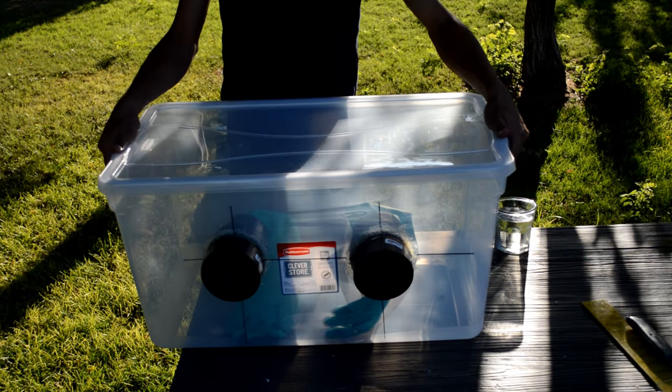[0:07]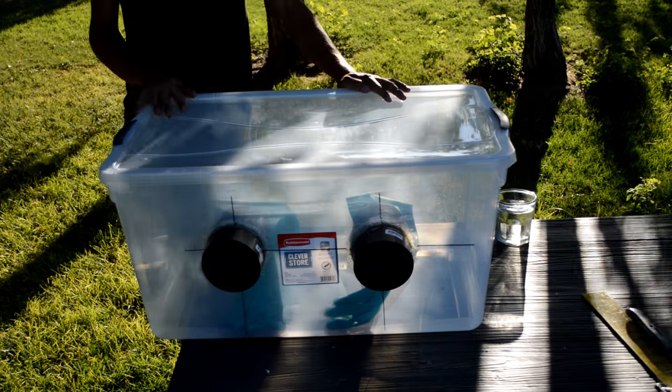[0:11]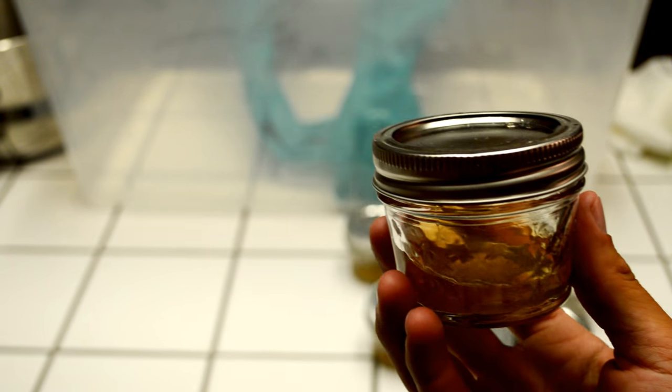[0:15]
Today we're going to show you how to construct a sterile glove box, the purpose of which is to provide you with a sterile workroom of sorts to perform everything from agar petri dish preparation to sterile spore printing. This build is a cheaper and less intensive project than building or buying a laminar flow hood, which is the other popular option for creating a sterile workplace.
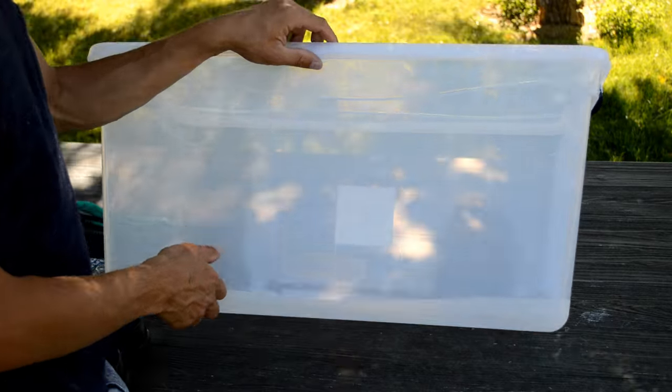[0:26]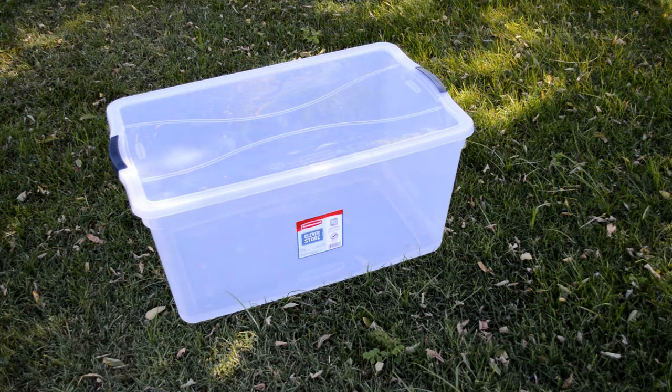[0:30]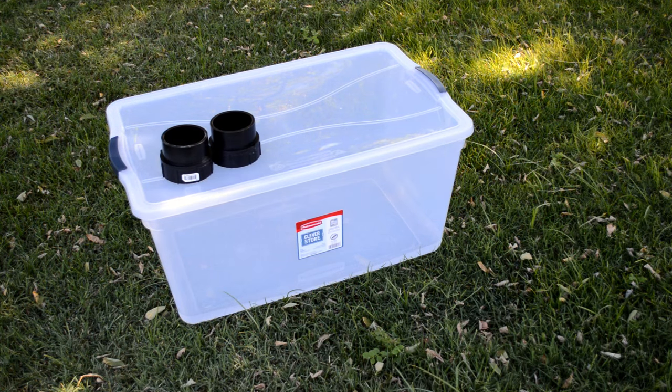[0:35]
For this build you will need a plastic tote, making sure that the plastic is clear because you will need to be able to see into it. Another nice feature to look for are the lid clamps. Then you will need some sort of short piping, and these will serve as the glove ports. For this build we purchased both male and female threaded ABS adapters.
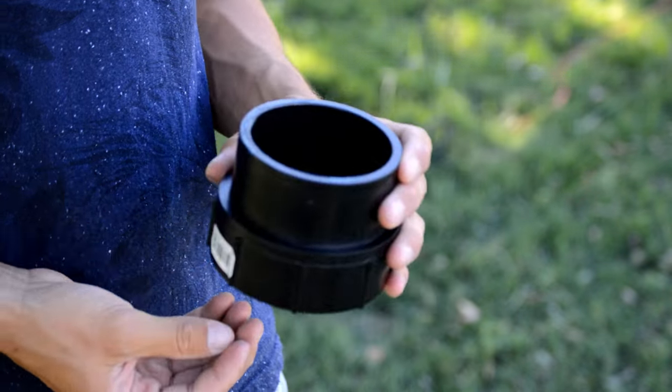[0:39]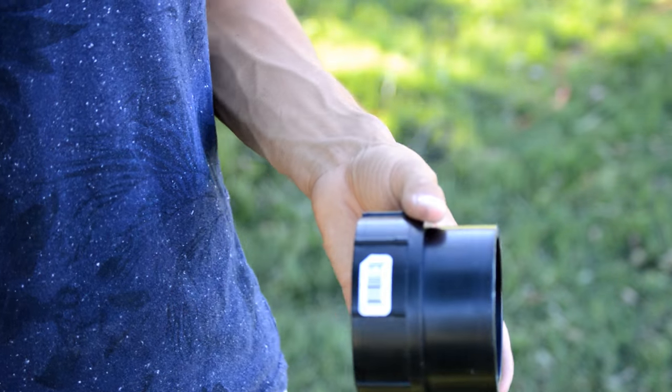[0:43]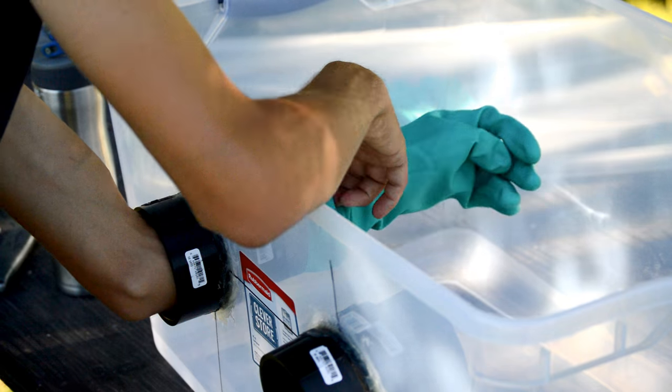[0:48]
We used 3 inches here, because we could comfortably fit my hand through them, but looking back, I would have opted for a larger size. One, because my gloves had huge openings, and two, because I couldn't get my arm in past my elbow, and being that this is a fairly large tote, I could have used the extra reach.
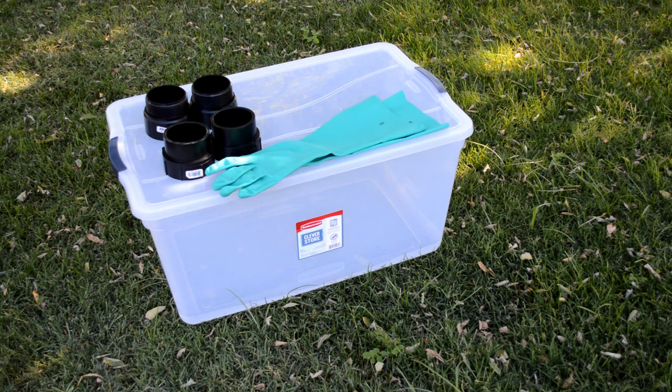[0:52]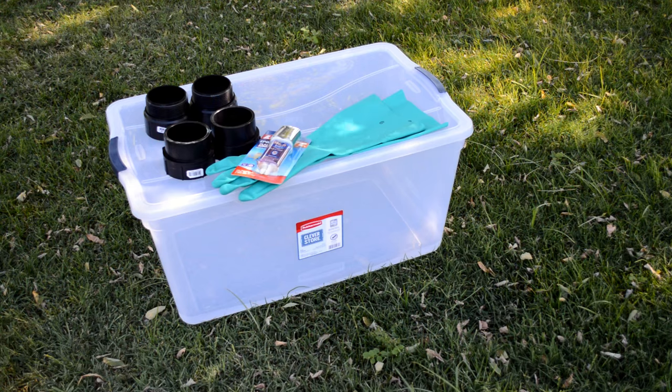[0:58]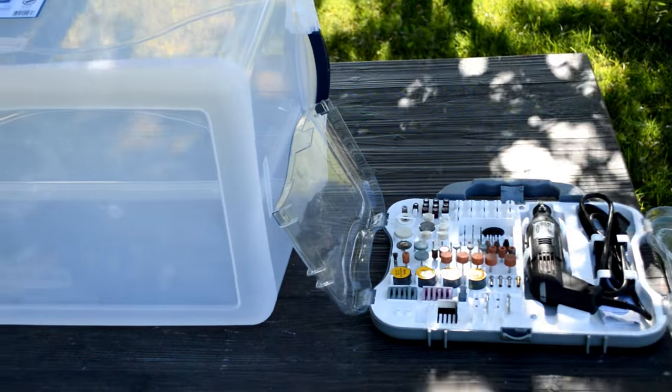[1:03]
Moving on, you will also need gloves. Make sure they are long enough for you to reach all the way across the inside of the box. Then you will need some plastic epoxy to secure the pipe ports of the box. And lastly, you will need to get some foam weather stripping. Now that we have everything we need, we can begin the build.
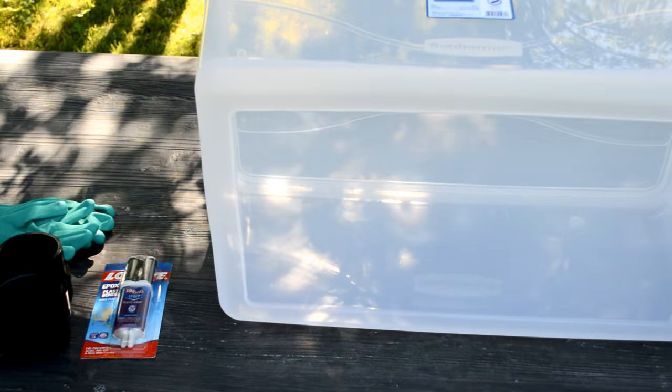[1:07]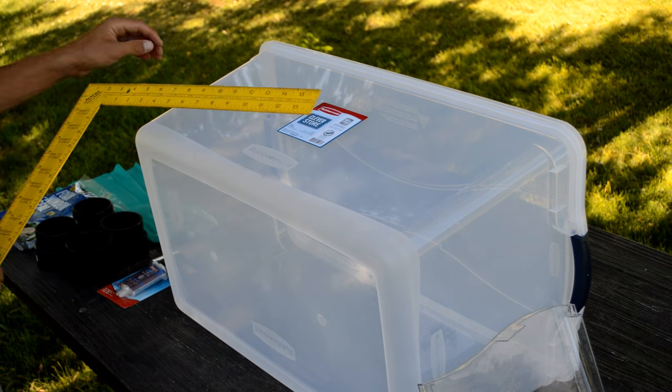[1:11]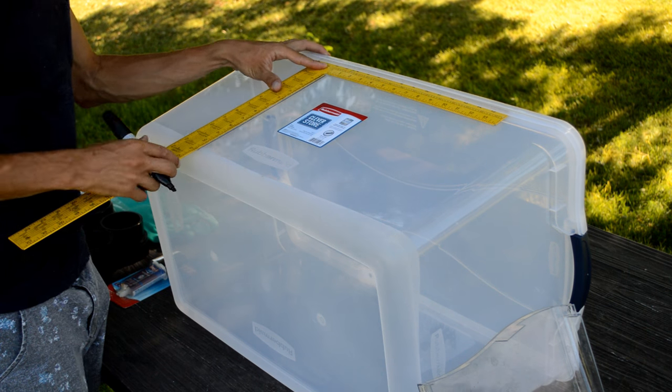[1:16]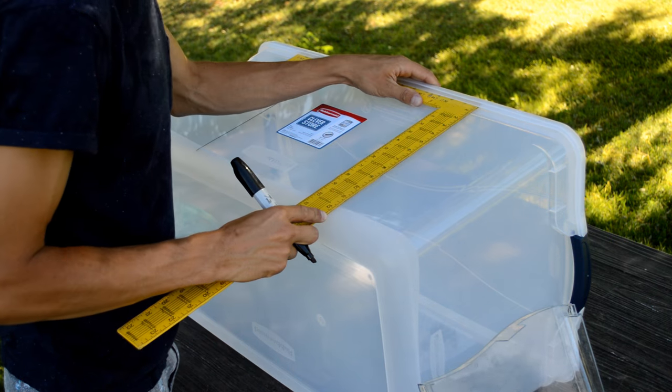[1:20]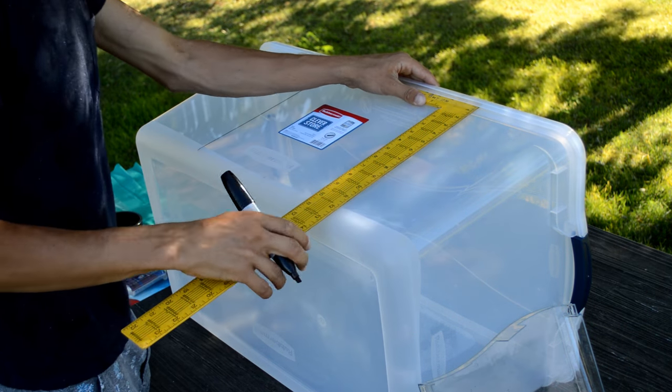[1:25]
The first thing you're going to want to do is to mark out your holes for the glove ports. One trick to figure out your hole space is to put your arms down at your side and bend your elbow upward to a 90 degree angle as if you are looking down at your hands. The distance between your hands is going to be around how far apart you're going to want to make the center marks for your holes.
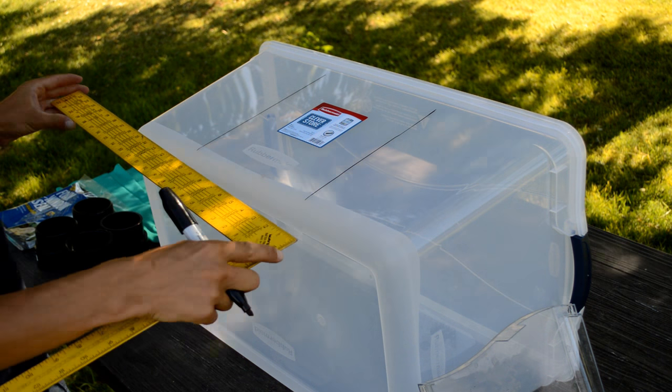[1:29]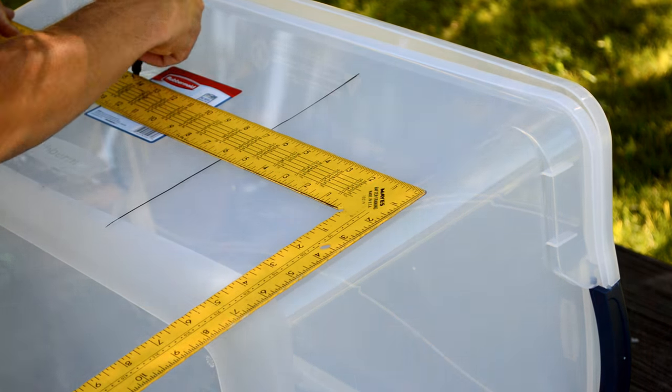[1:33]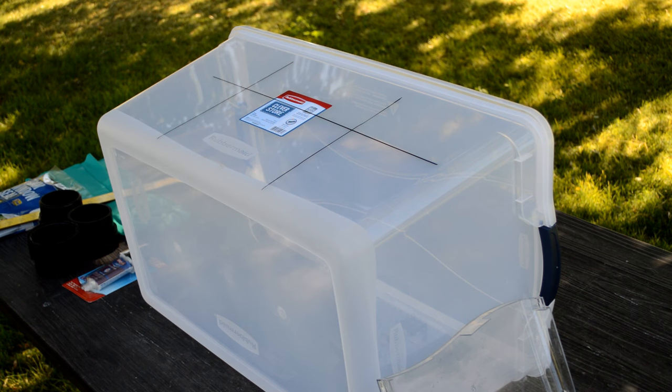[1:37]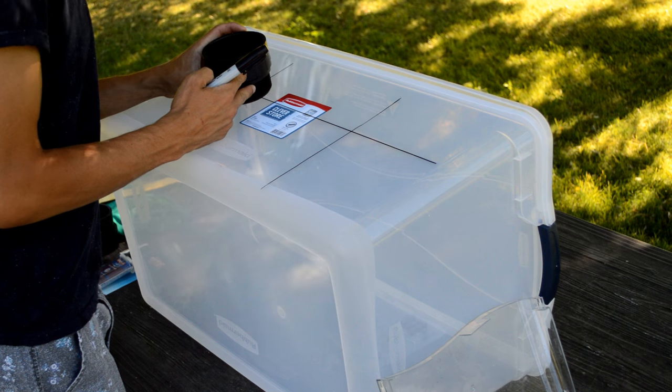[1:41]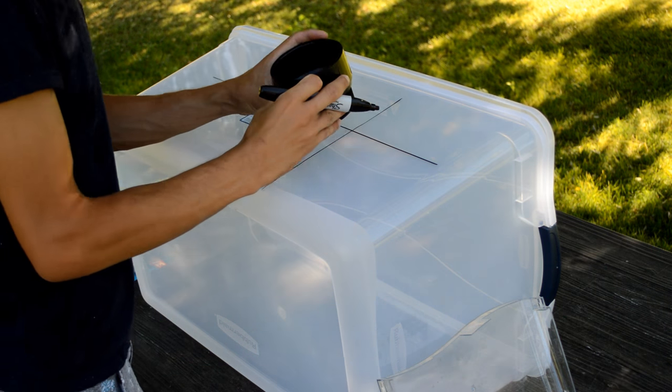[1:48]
Once you have your center point drawn, go ahead and align the pipe fittings and trace out the inner diameter of the pipe. I would highly recommend tracing the inner diameter because of the simple fact that you can always widen your hole after you make the first cut. But if your hole is too widely cut, you're going to be doing some improvising to fill the gap between the box wall and your tubing.
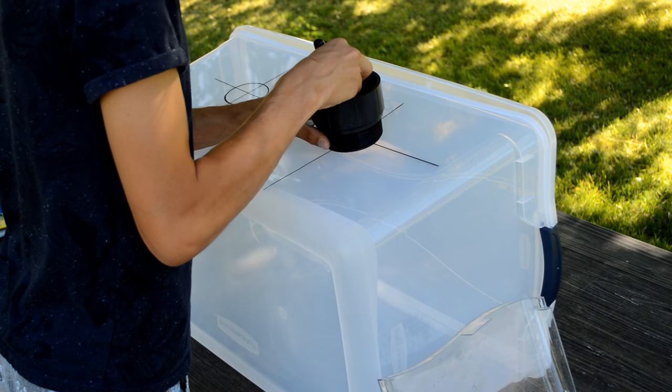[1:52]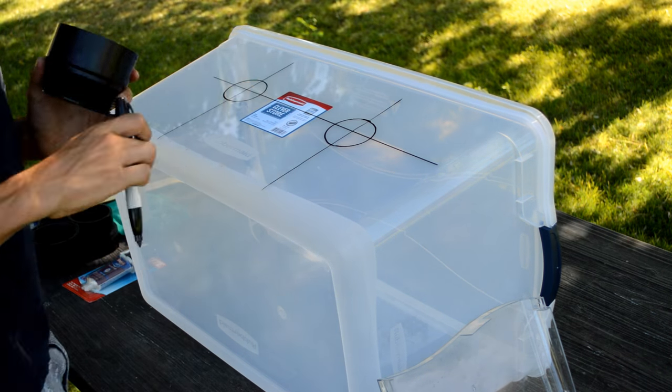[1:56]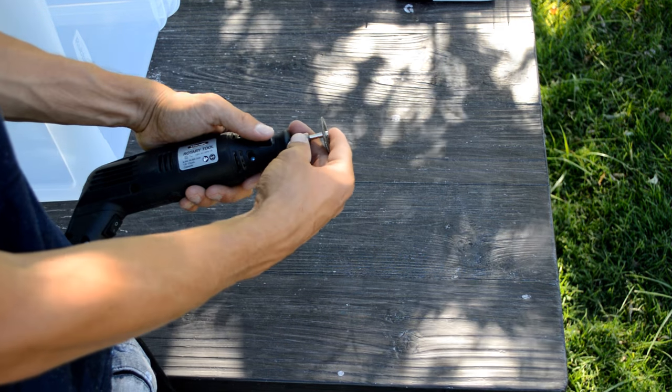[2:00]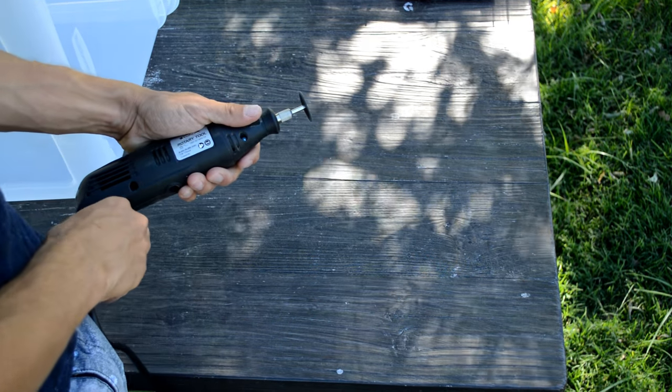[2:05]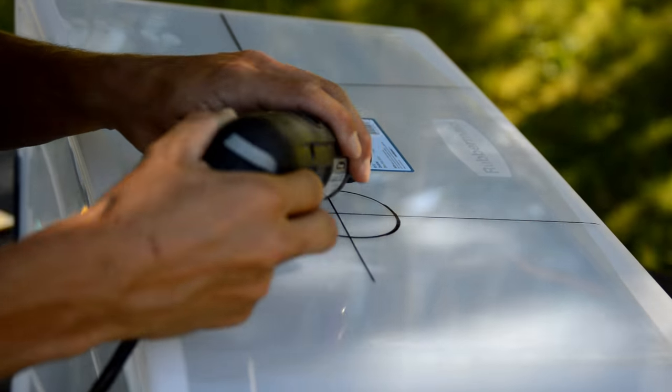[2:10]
Now that we have traced out the holes, we can begin cutting. There are a million ways to cut a hole. I wasn't able to find a hole saw, so I used this hand Dremel tool with a cutting disc instead. This method can be a little messy, but don't worry, we're going to go back and sand it all out.
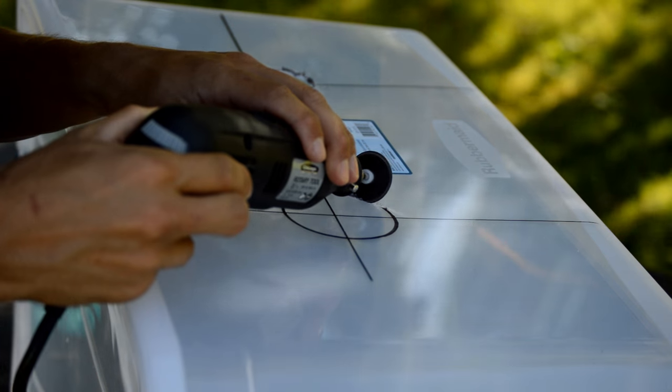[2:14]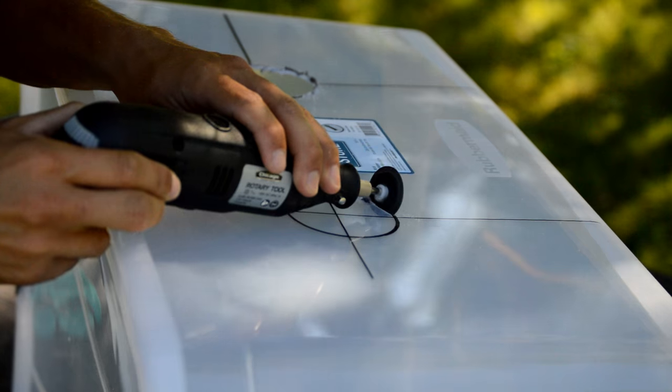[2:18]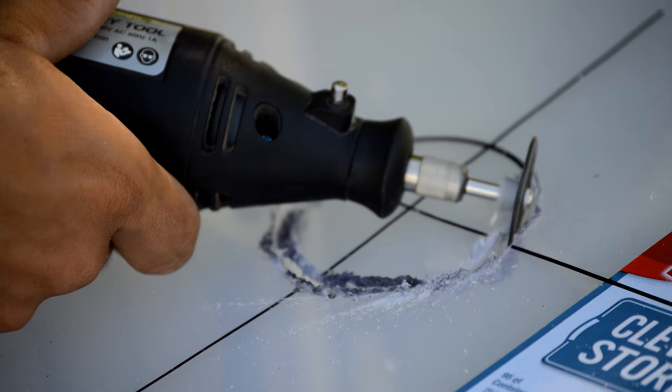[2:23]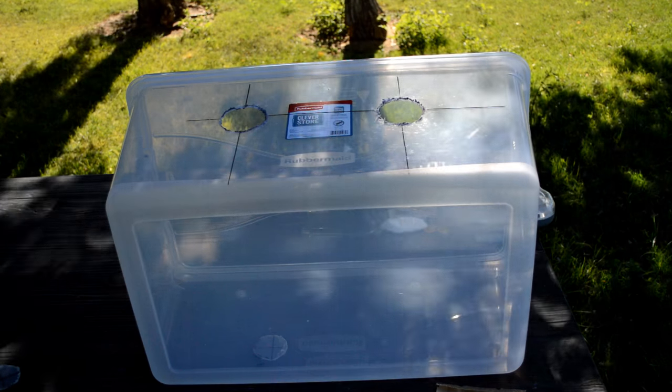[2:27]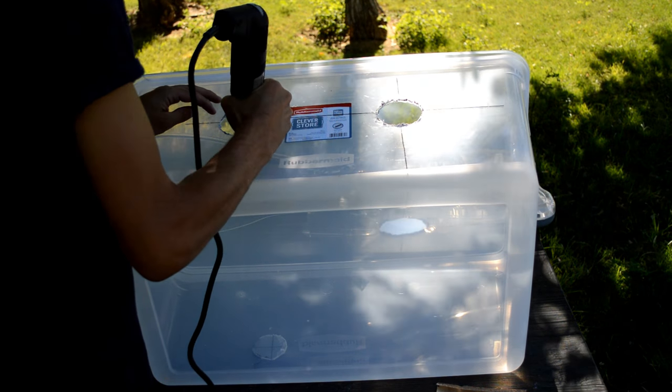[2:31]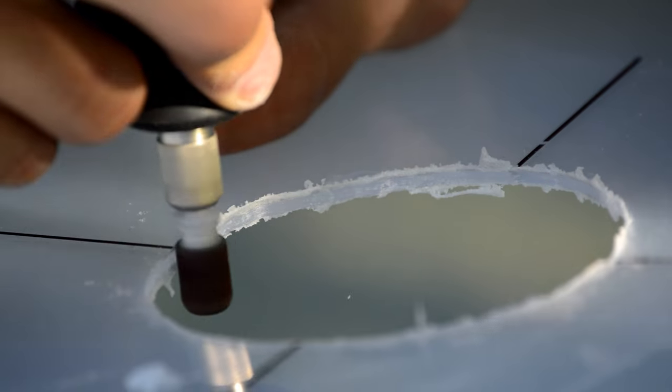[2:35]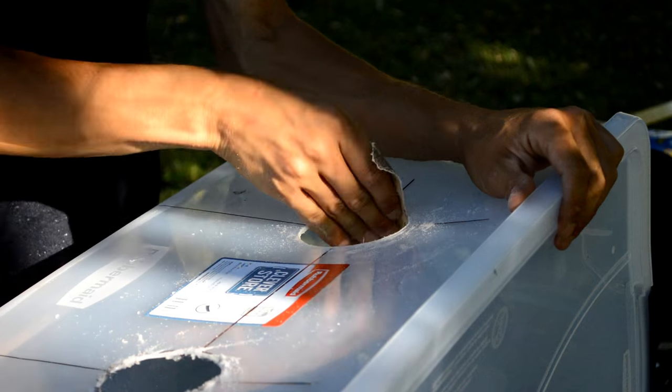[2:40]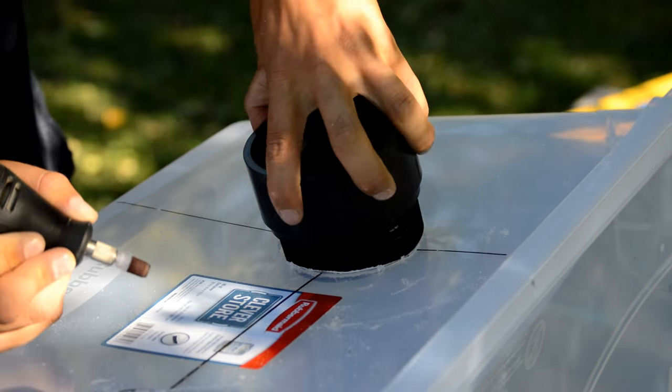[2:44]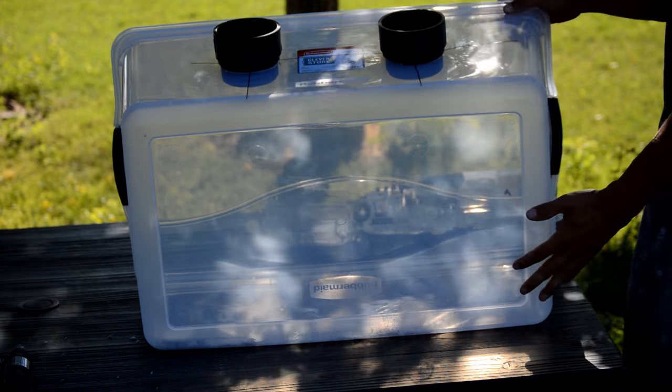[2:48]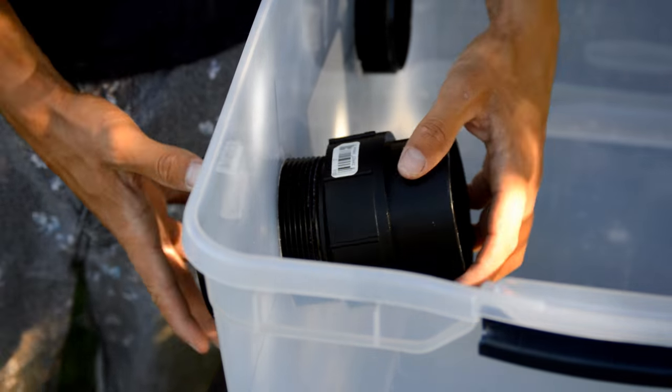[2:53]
Now that the holes have been sanded out, I'm going to go ahead and thread the male adapter into the hole from the outside. Now I'm going to screw the female adapter from the inside, making a nice tight fit.
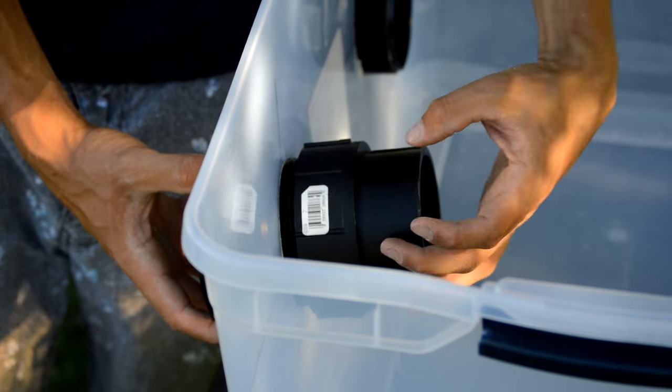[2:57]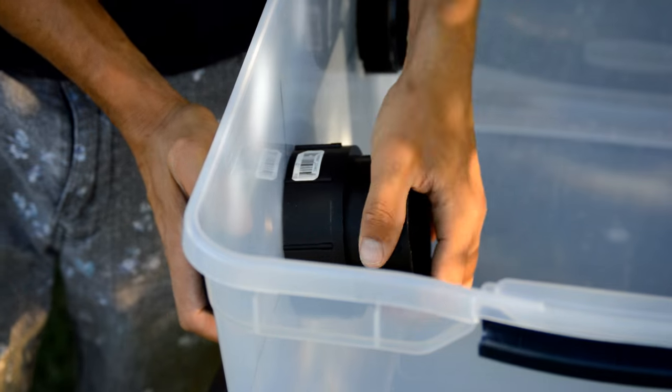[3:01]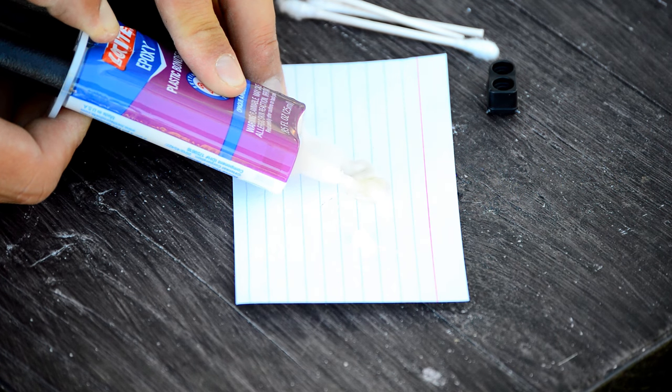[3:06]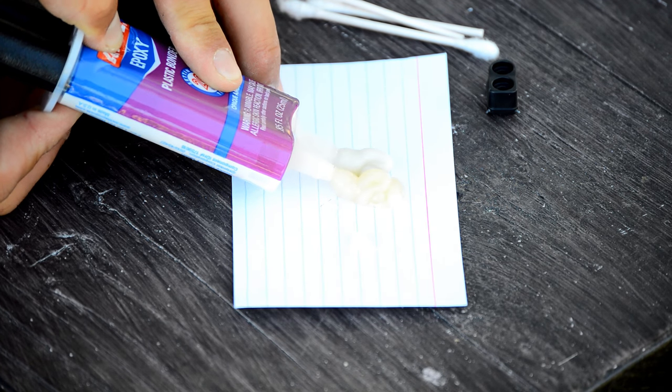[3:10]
To keep these ports from slipping or rotating, we're going to mix up this plastic epoxy. Being that this was two-part epoxy, it's not going to be pretty, but it'll do the trick. Now this stuff dries pretty fast, so don't take your time with this step.
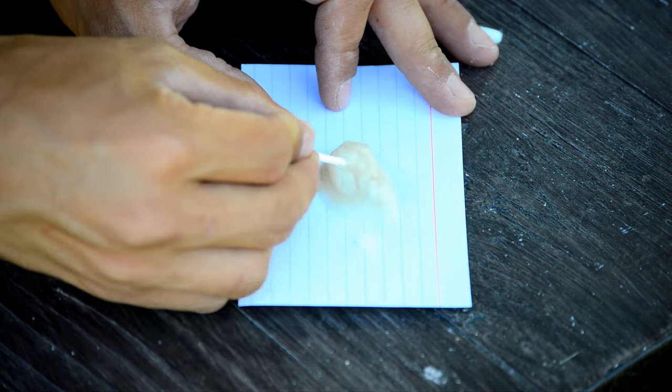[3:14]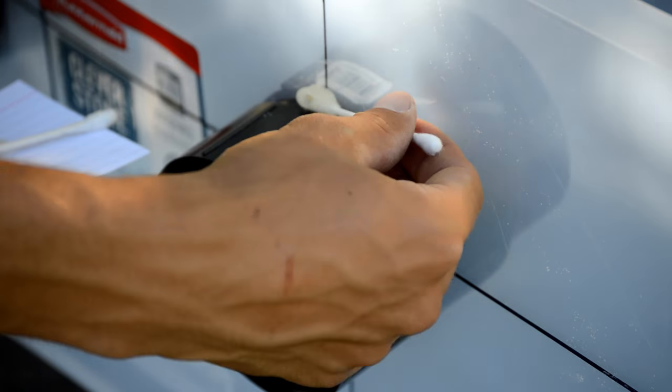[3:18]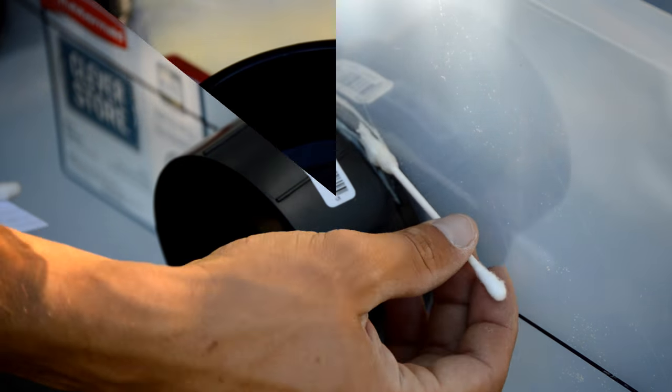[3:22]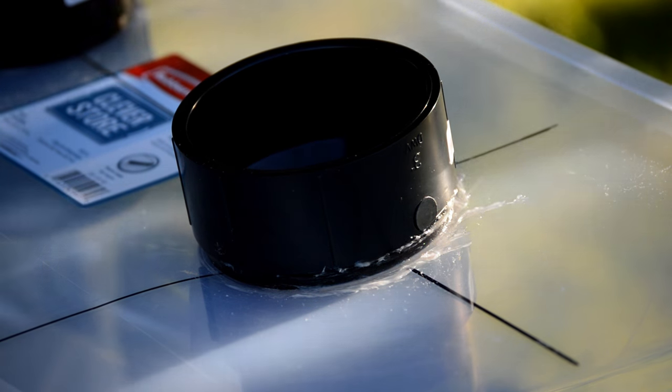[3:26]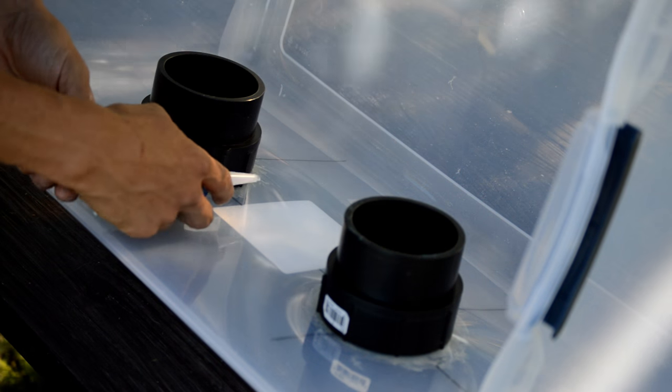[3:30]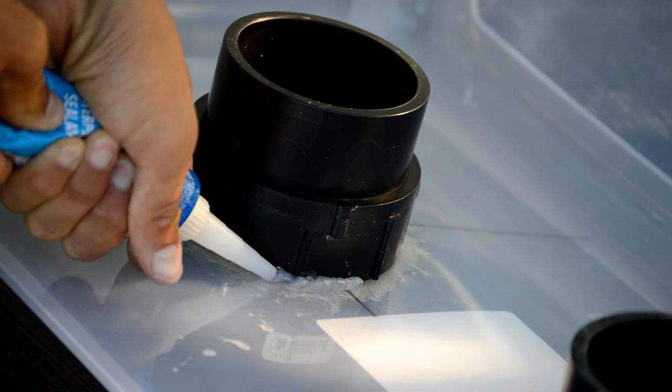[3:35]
We didn't mention this ingredient in the parts list, but it's a good idea to make a nice smooth bead on the inside of the piping with some silicone. This is going to ensure that no airborne contaminants will enter this way.
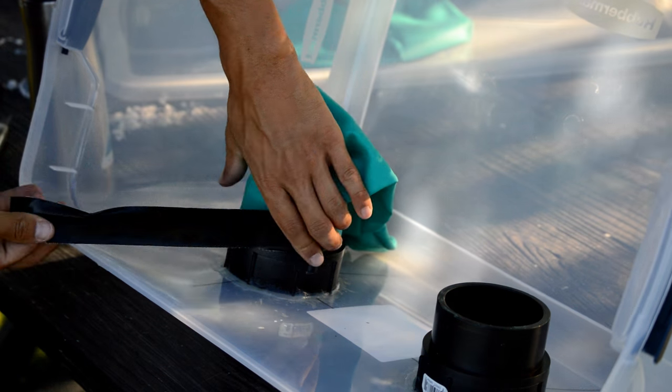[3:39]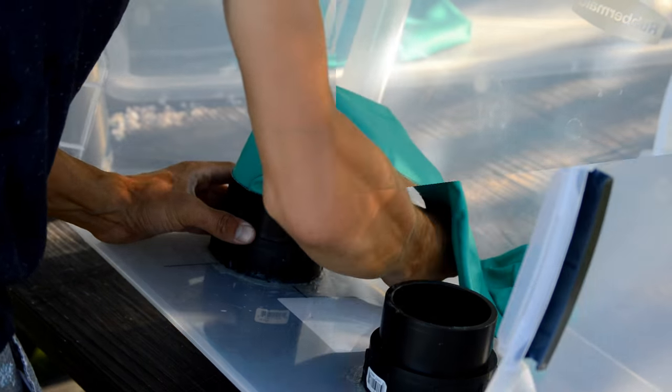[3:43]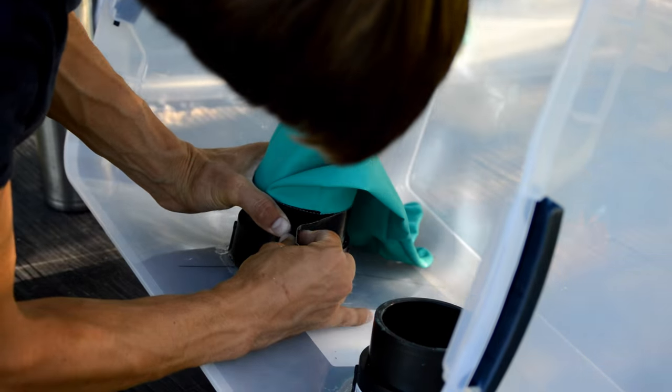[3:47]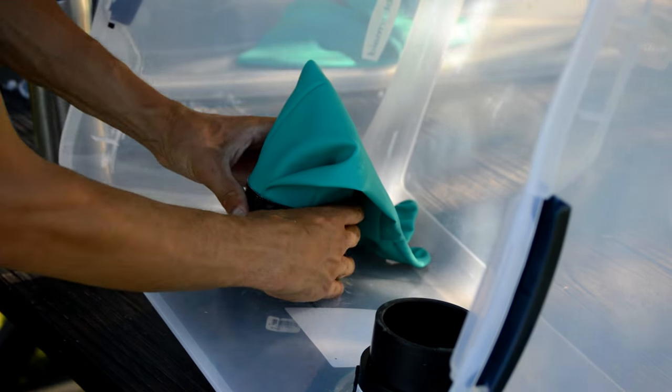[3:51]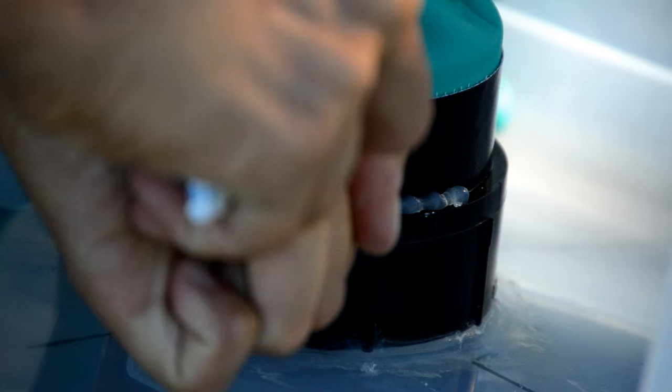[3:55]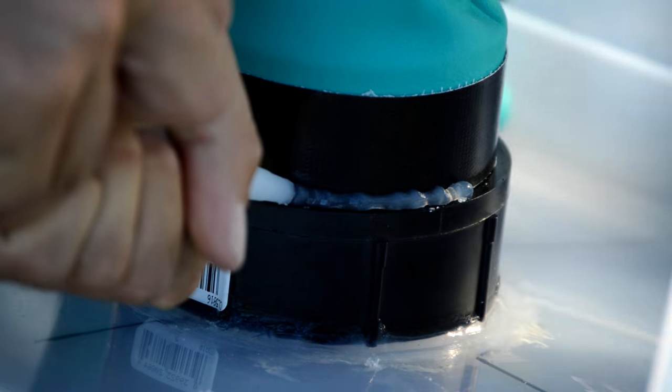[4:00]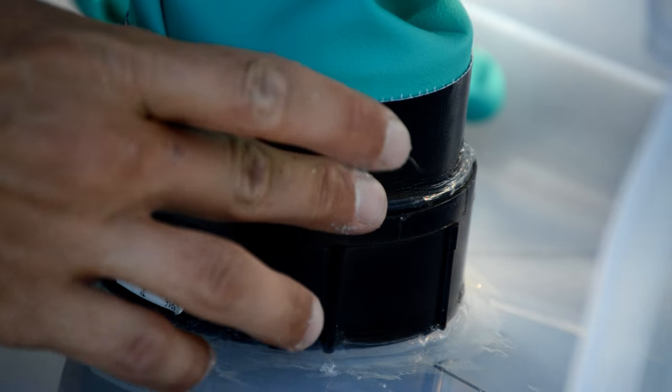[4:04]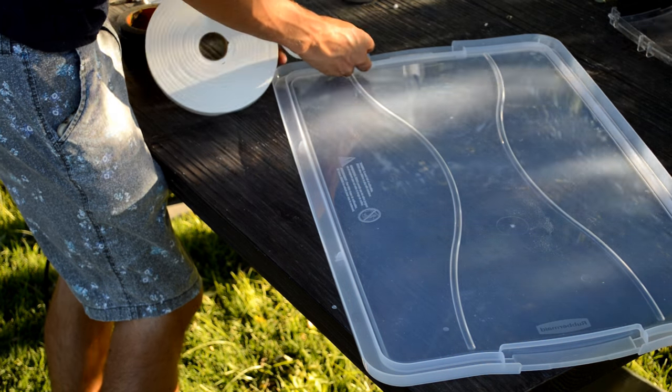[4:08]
After our glue has set, we can now attach the gloves. It's a good idea to seal the tape seams where air might be able to travel. Now that our glove ports are nice and airtight, we can move on to making the lid airtight as well.
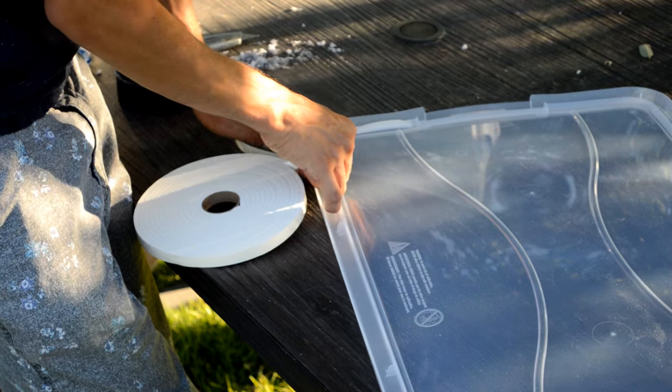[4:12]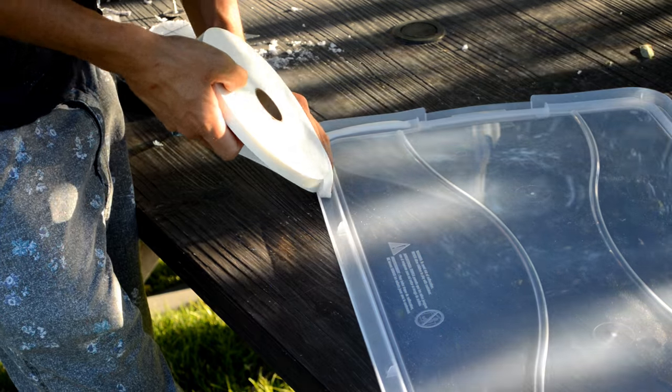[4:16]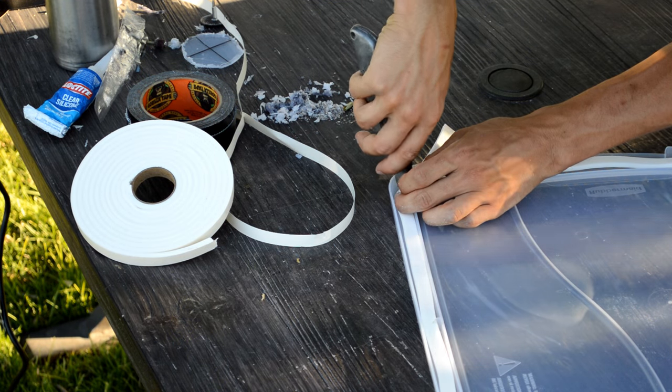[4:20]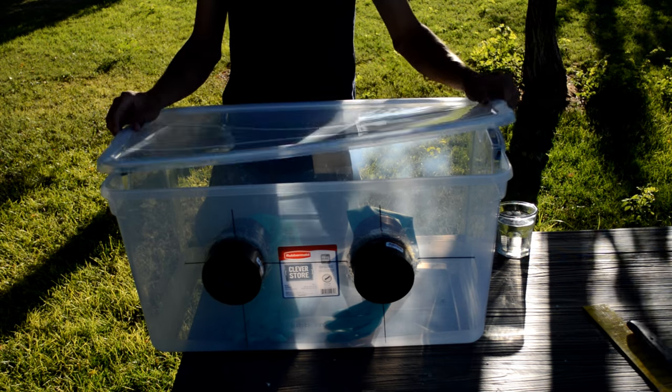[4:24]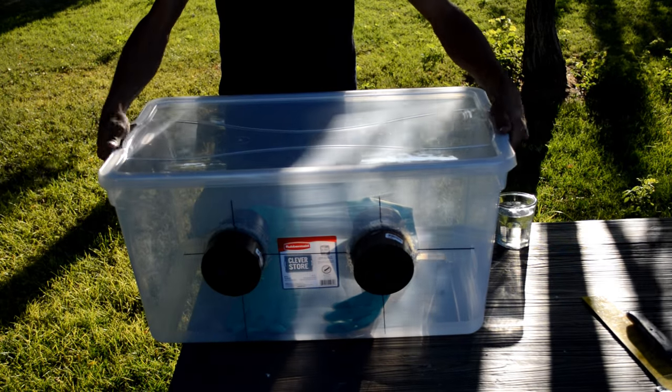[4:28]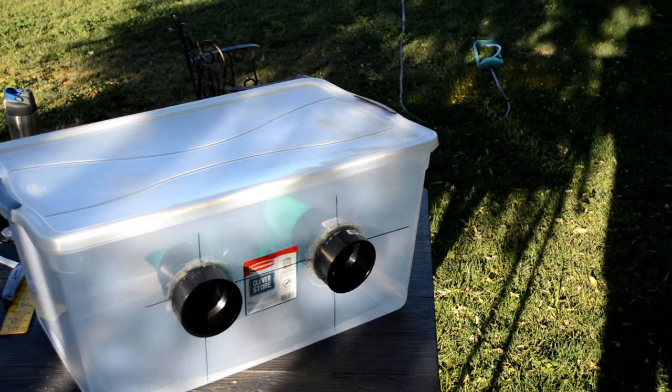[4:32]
To do this, we can simply add this weatherproofing window foam along the top edge where the lid seals against the box. Despite adding this extra thickness to the lid, the clamps on the sides of the box still snap tight, which saved us from having to clamp everything down. And voila! Your DIY sterile glove box is complete and ready for some high intensity science.
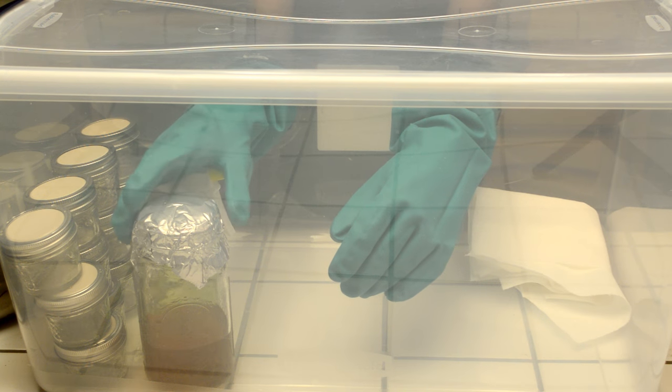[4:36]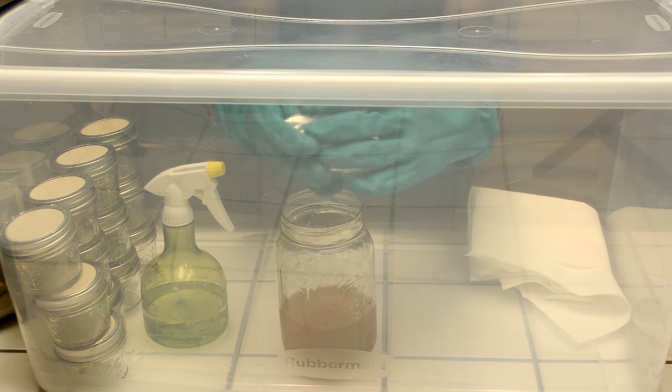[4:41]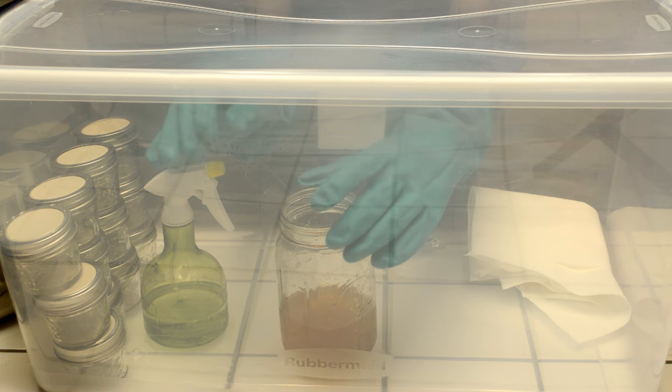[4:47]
Looking back on this build, I would have opted for larger piping just to have a little more wiggle room and reach. Also, one problem I ran into was that whenever I applied any pressure onto the wall of the box where the glove ports are, which happened a lot when I reached around, I would push the top edge of the box off of the lid tracks, thereby letting outside air inside the box.
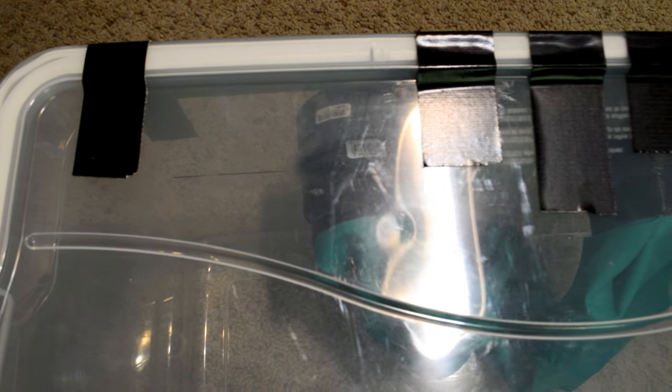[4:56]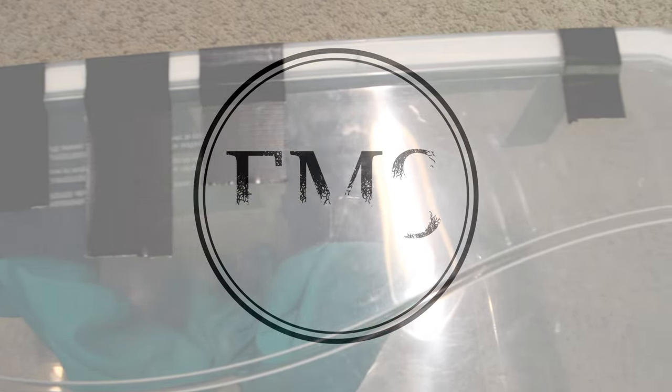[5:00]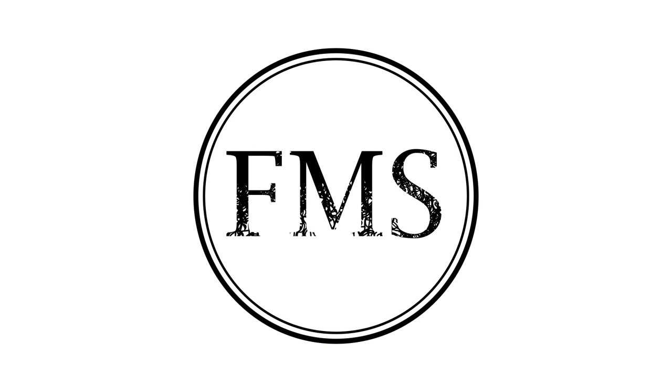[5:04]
To fix this, I added another strip of weatherproofing foam along the outside edge of the lid. I also thoroughly taped that part of the lid to the wall it rested on. Now it's not going anywhere, and I'm confident that it's totally airtight. Remember to thoroughly sterilize every inch inside the surface of the box, including the gloves, before you perform any work inside the box that requires totally aseptic conditions.